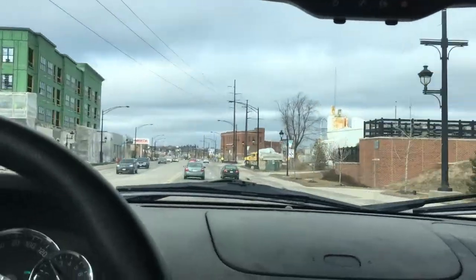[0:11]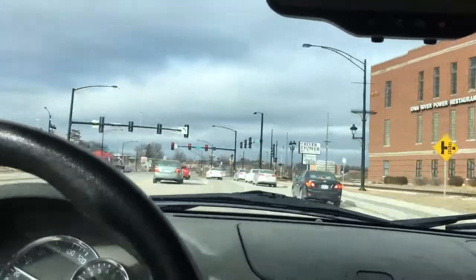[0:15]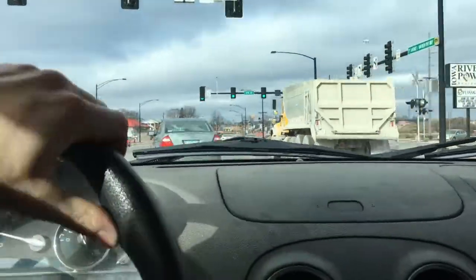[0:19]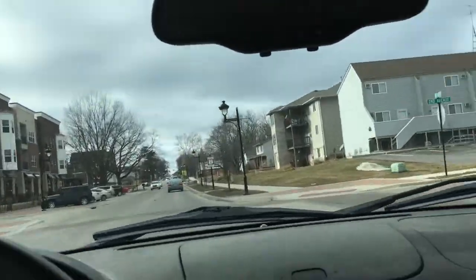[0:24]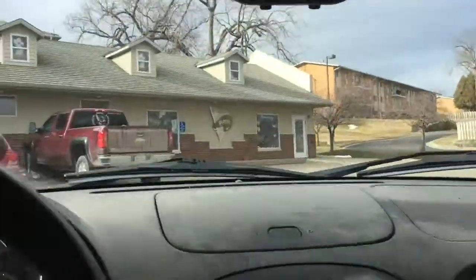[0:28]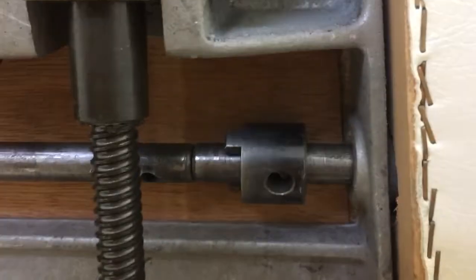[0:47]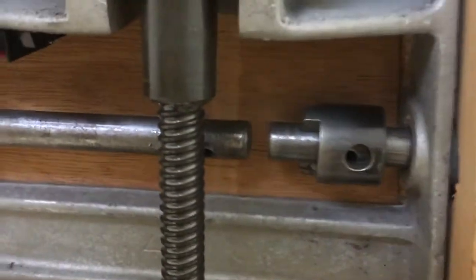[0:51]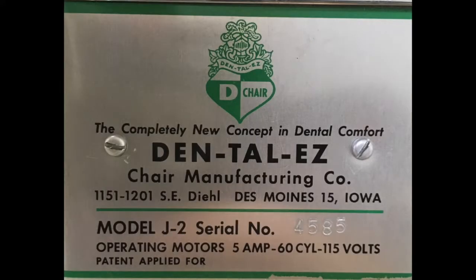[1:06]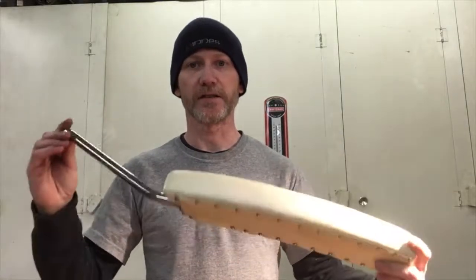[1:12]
I finally have a machining job to share with you. As you probably figured out from the intro clips, I am making a piece for an old dental chair that is now being used at a tattoo shop. So here I have this lovely 1960s or 70s styled arm. And basically what I'm making is the piece that allows this arm to go up and down and stop in the up position and the down position.
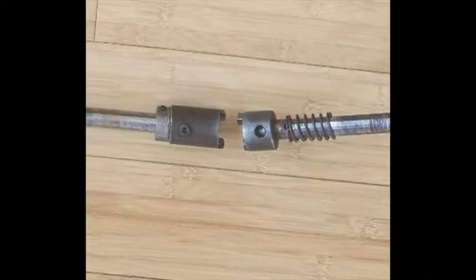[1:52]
And the piece was not broken, it was disassembled and lost. And parts for these are kind of scarce. If you can find the arms on eBay, they want hundreds of dollars for the arms, and I just need this little piece. So essentially, this is the piece we do have, and the other end of it is basically the same thing, just a little bit longer. And as you can picture, when they come together, it would be able to turn just that much.
So I'm going to make one out of this random chunk of steel I had in my junk drawer. Since I don't have a milling machine, making these two little notches would be kind of tricky. I was thinking I could set it up in a drill press, drill a series of holes, and then remove the waste with a file and a grinder, but I think what I'm going to do is just make it flat, drill and tap two holes, and put in two cap screws. And I think that should do the trick. And if for some reason the head of a cap screw ever breaks off, I should be able to back it out and put in a new one, but unless somebody's jumping on it, I think it should hold up.
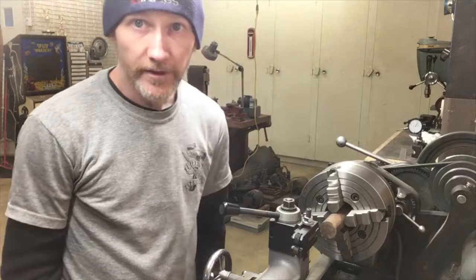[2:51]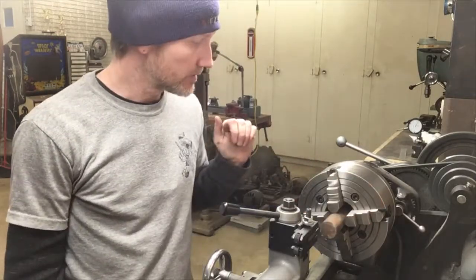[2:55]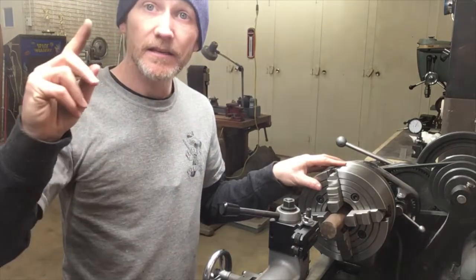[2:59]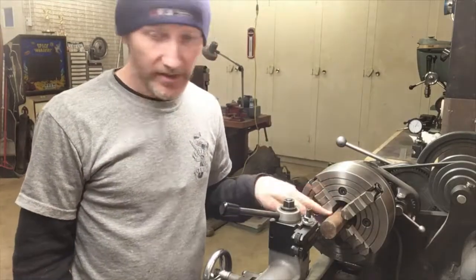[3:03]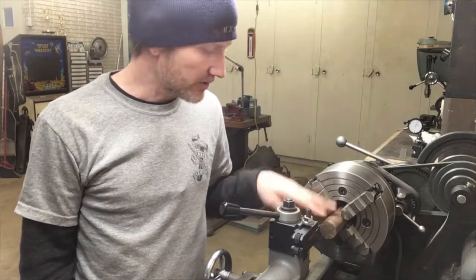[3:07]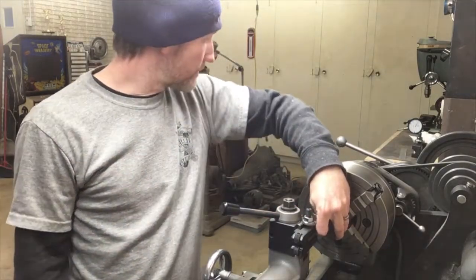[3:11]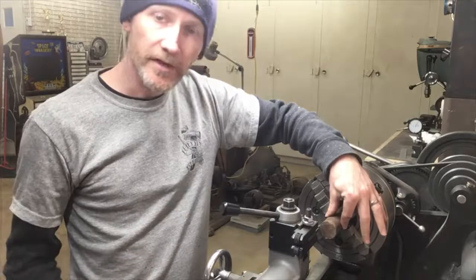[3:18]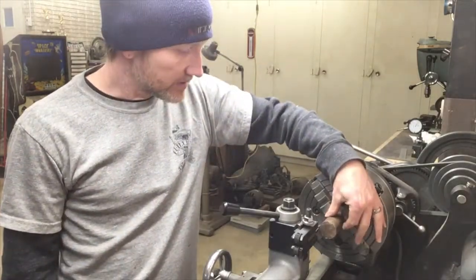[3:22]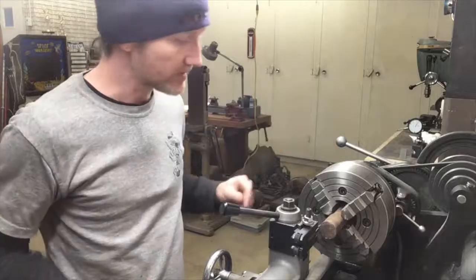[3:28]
So, finally, let's go to the lathe. All right, we're over here at the lathe. I've already got the metal chucked up in here. I didn't show indicating that because my only indicator stand happens to be my camera stand. So I'm basically just going to face it. I'm going to have to turn it down to, I'll double check, but I think it's 1¼ inches OD. Drill in a 5/8 inch hole and then part it off somewhere around 1¾ inches, I think. I only just looked at pictures of it, but it's not really critical. All it has to do is have two little bumps and fit over the piece and have a set screw. So I'm just going to get to it.
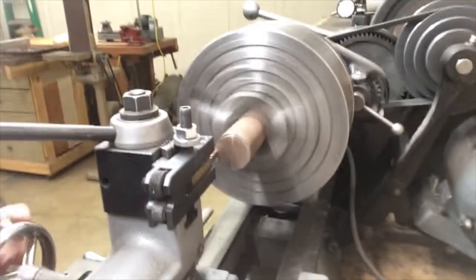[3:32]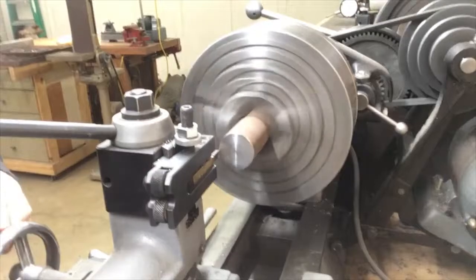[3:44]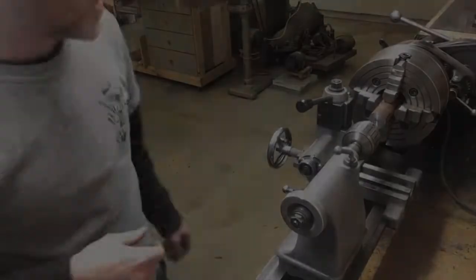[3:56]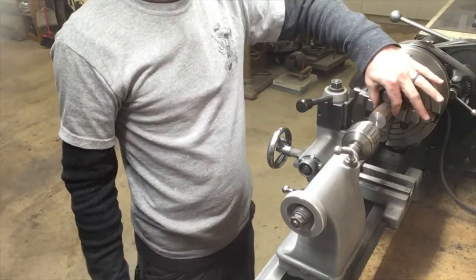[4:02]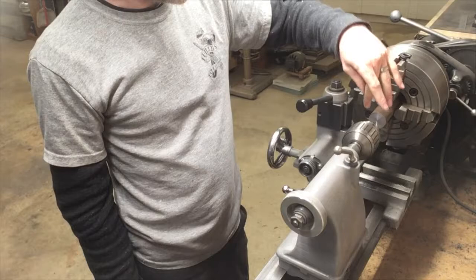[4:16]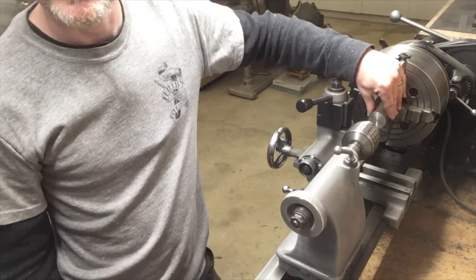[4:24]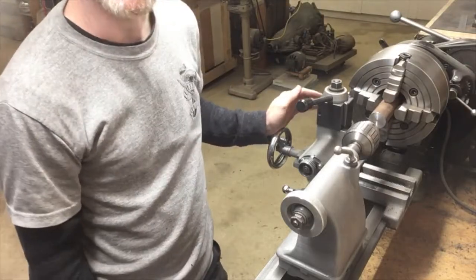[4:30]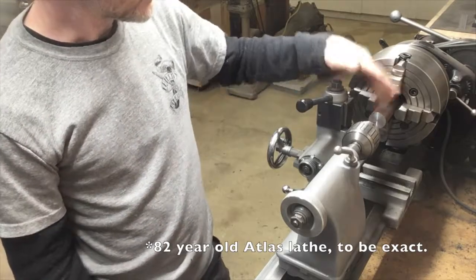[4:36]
So I'm just going to put a hole here for a center to support it, even though this is 1½ inch steel stock, only sticking out 2 inches. This Atlas lathe is flimsy as hell. It might as well be made out of cardboard. So I need all the help I can get. So I'm going to get a center on here just to turn this down a little bit. As you probably noticed on the facing, I was taking about, I don't even know, 5/1000ths passes or something. That was all I could do before it started chattering. So that's just the life of having a 100-year-old Atlas lathe. So I'm going to punch that, get a center in, and turn it down.
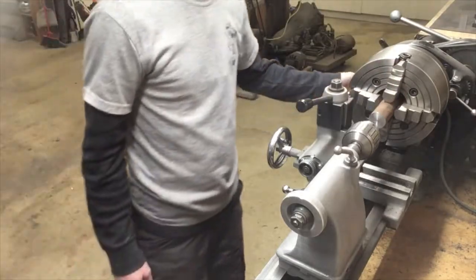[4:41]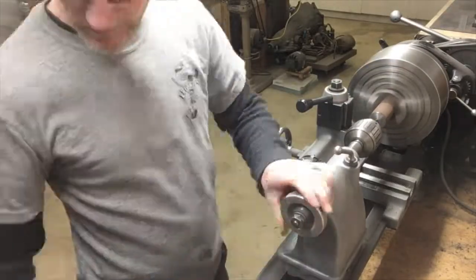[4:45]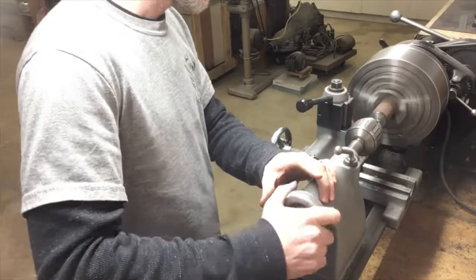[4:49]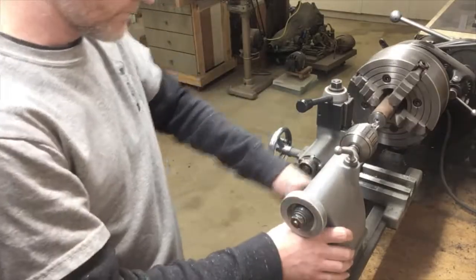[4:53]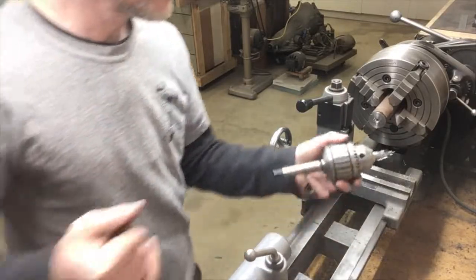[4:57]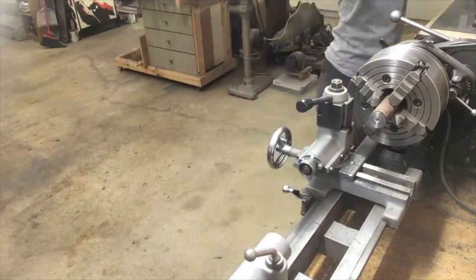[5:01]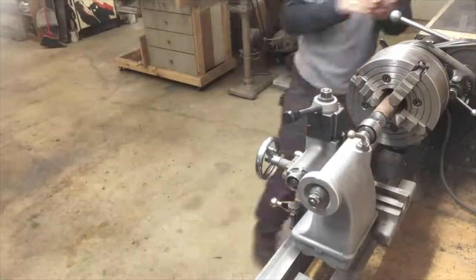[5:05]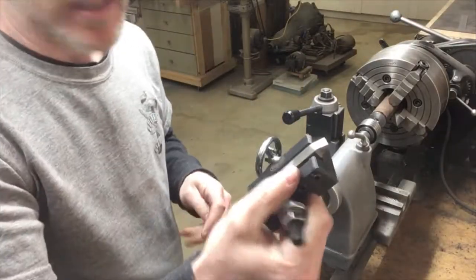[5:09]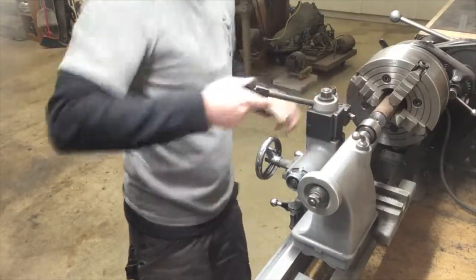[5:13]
I'm just using high-speed steel here. I'm not fancy enough for insert tooling.
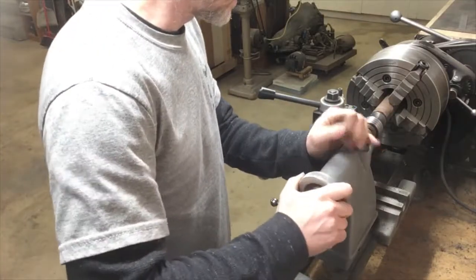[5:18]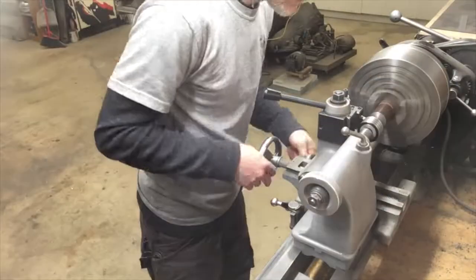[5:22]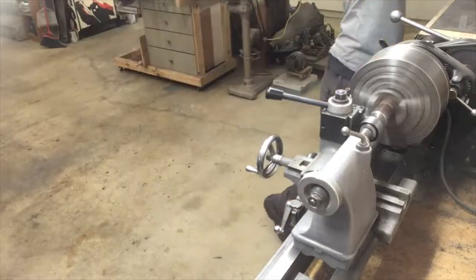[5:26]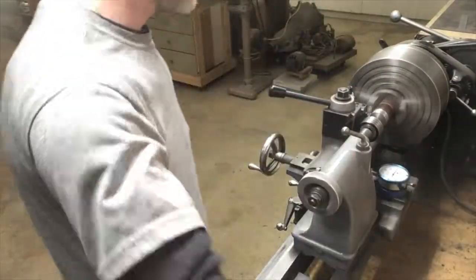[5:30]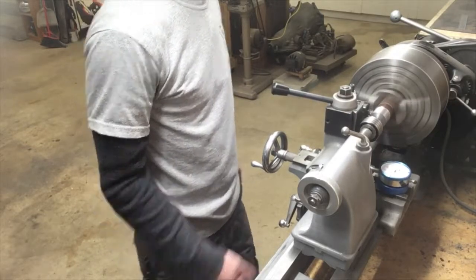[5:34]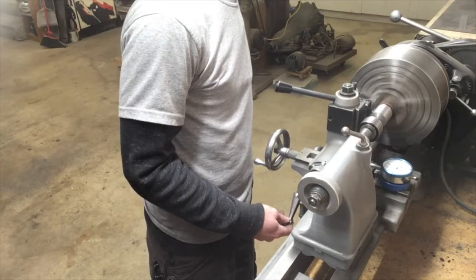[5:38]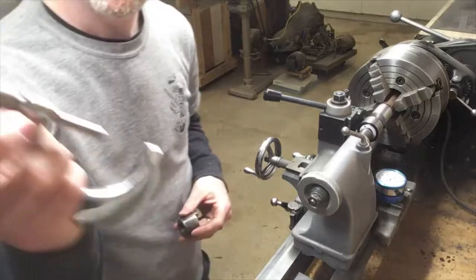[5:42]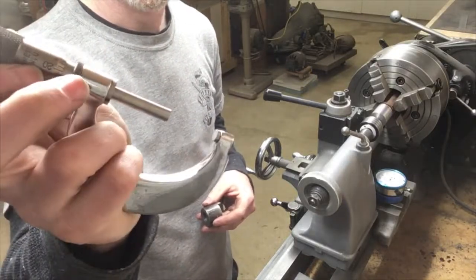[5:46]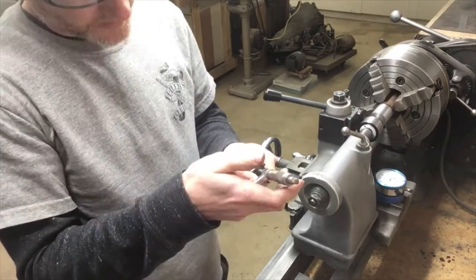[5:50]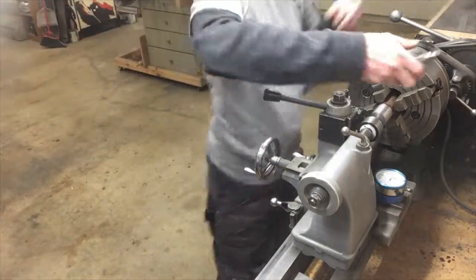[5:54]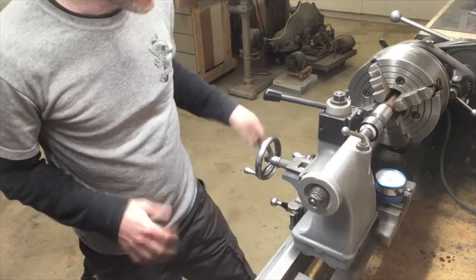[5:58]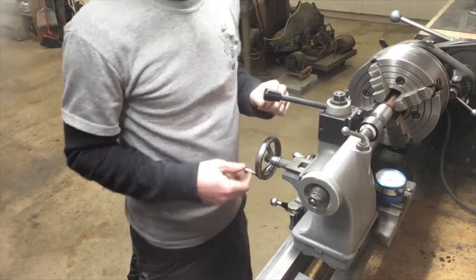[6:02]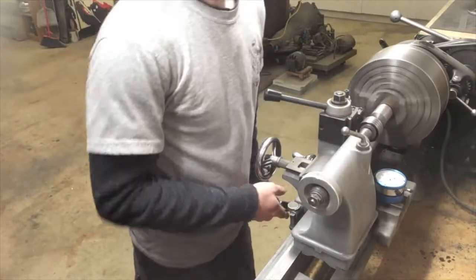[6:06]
This is just an excuse to show off my Shure Tomiko 1-2 inch micrometer. First time I've used this size. But I got just a bit over 1 1/4. It's 1.300. I need to go 1.200. So I've got to take off 100 thousandths. That's going to be about 30 passes on this thing. Let's try 20.
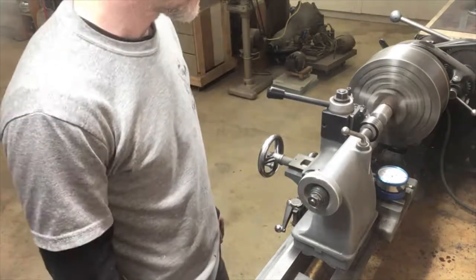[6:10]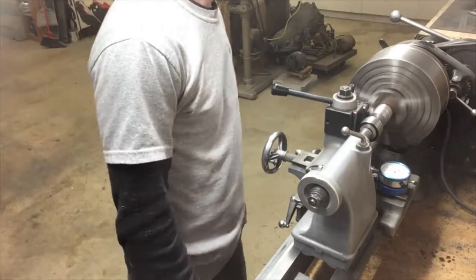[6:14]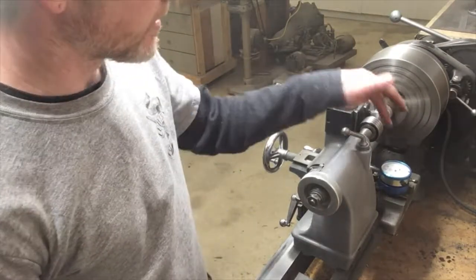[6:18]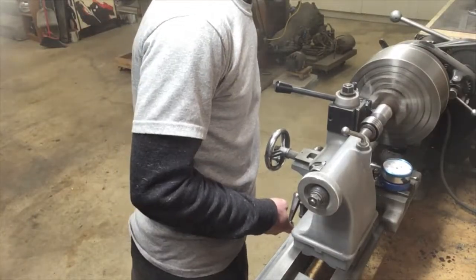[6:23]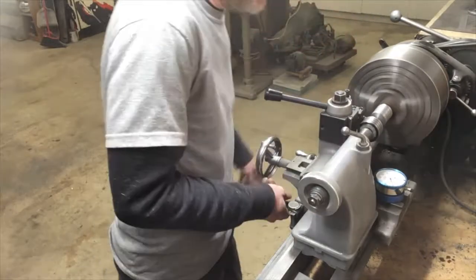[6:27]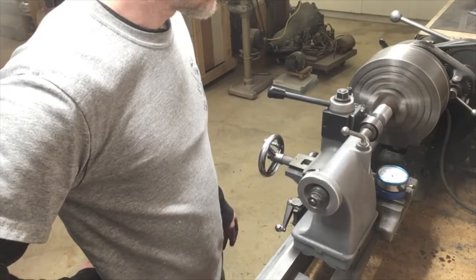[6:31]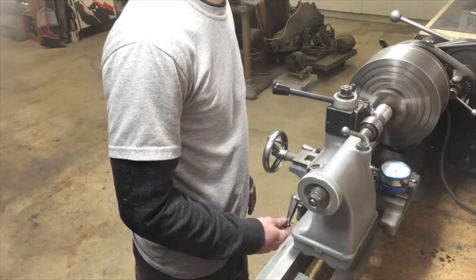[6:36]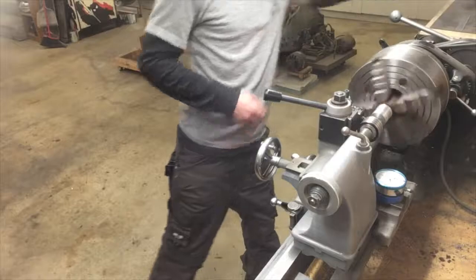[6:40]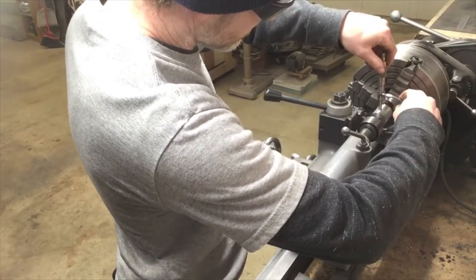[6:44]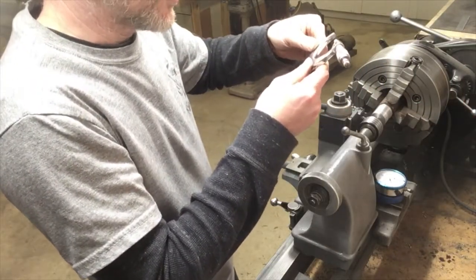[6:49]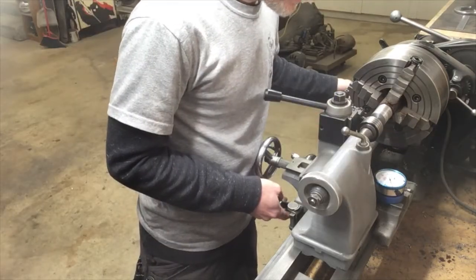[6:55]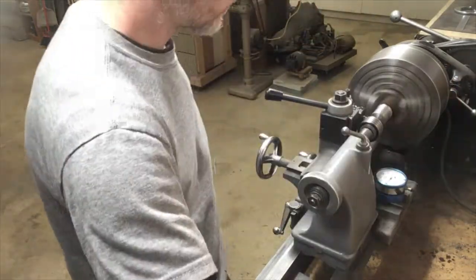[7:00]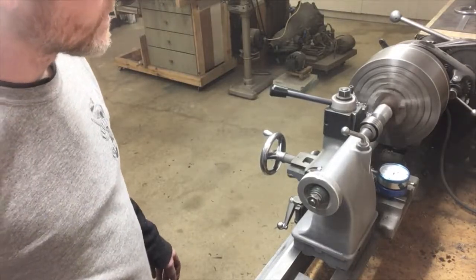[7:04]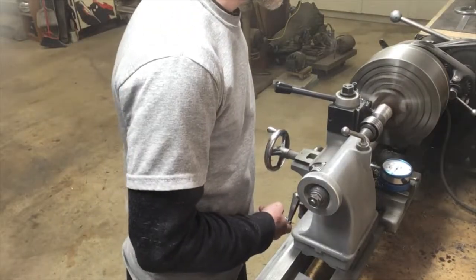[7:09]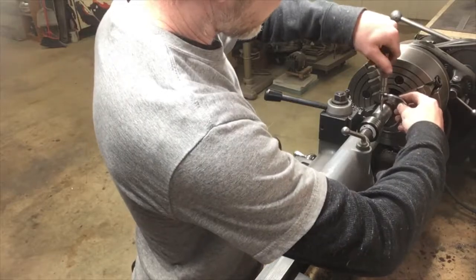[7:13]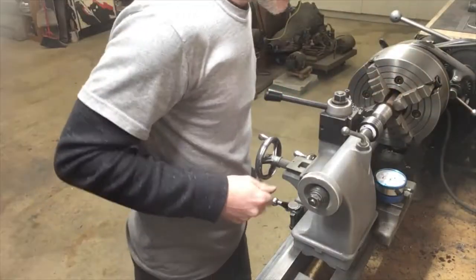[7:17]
I have no graduations on the dials, so I have to have the indicator set up. Do another 20. Okay, I got 1 inch, 279. So I'll take another 10. That should get us pretty close. Okay, if I measured correctly, that should be within about 5 thousandths. Let's do a quick little finishing pass.
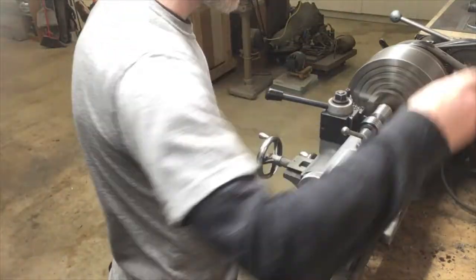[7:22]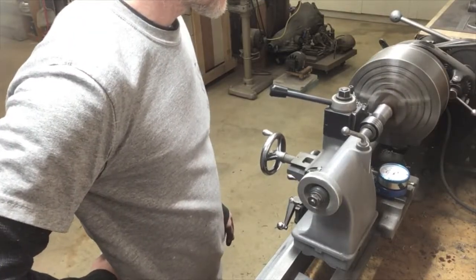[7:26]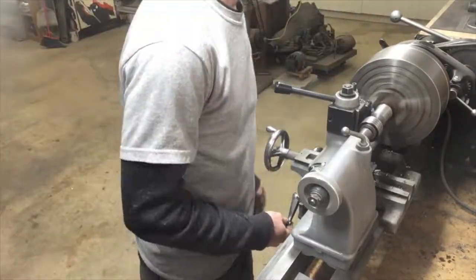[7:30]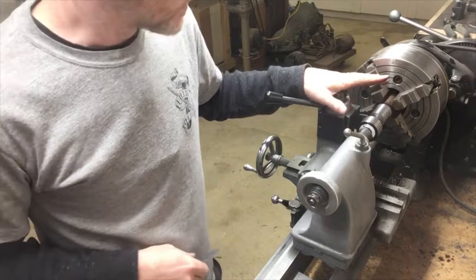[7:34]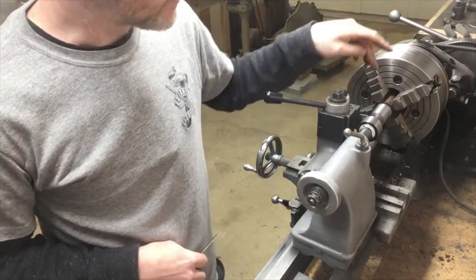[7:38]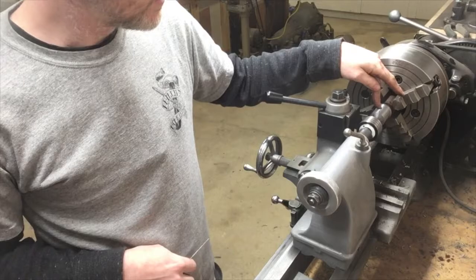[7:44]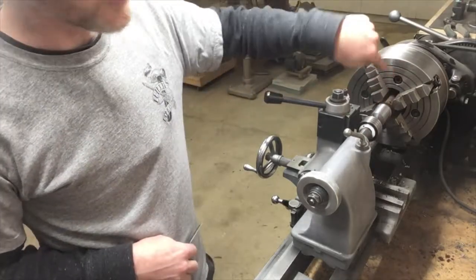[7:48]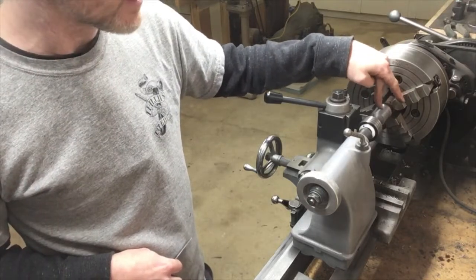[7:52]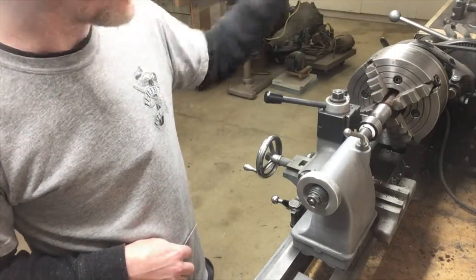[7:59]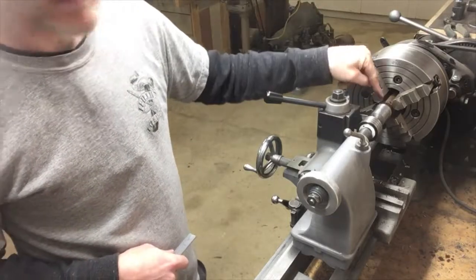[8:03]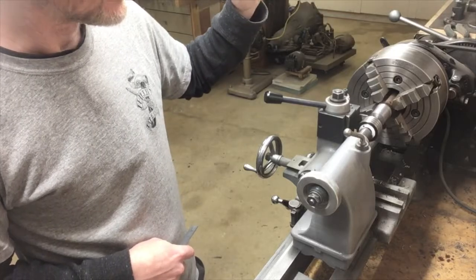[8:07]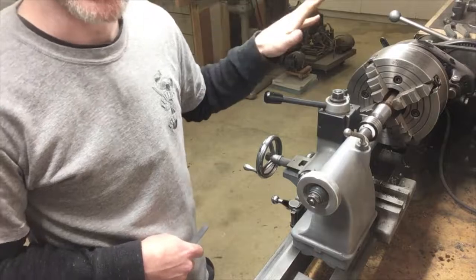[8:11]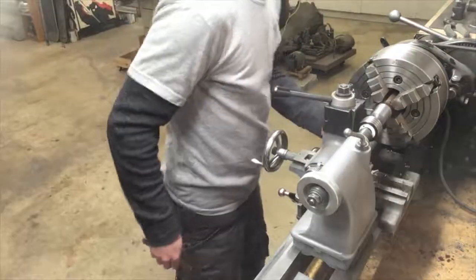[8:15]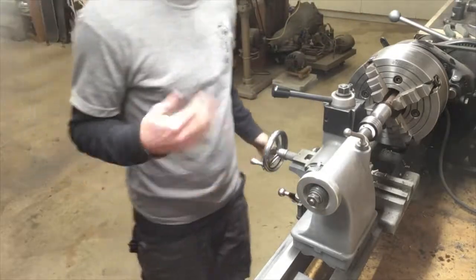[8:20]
Okay, so the normal order of operations wouldn't be to do it this way, but this lathe, I know it well enough to know it's too flimsy to do any parting without a center in. So I'm going to part part of the way through while I still have the center. Then I'm going to switch out, drill through it, and hopefully it'll be close enough through that I can just finish it off with a hacksaw or something. Basically, parting on this is just painful. I have it in back gears on the absolute slowest speed, and I've got to go real slow, use a lot of oil, have the center nice and tight, and maybe I'll be able to make a cut without the blade exploding. Safety glasses on. I'll lock it right there and get my oil and hope for the best.
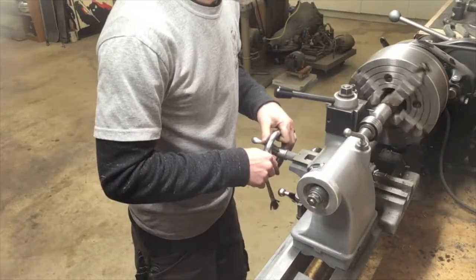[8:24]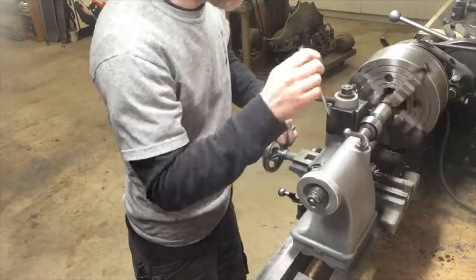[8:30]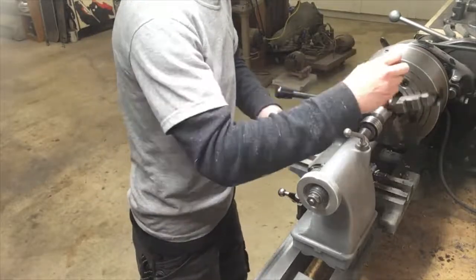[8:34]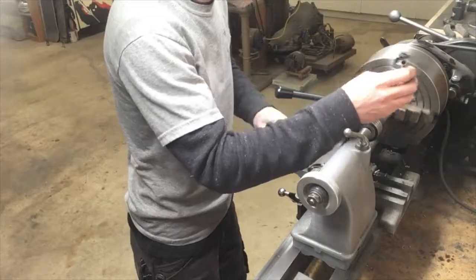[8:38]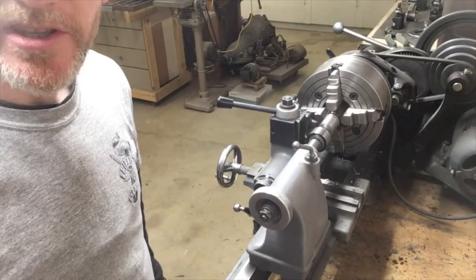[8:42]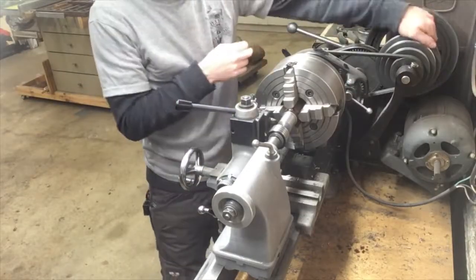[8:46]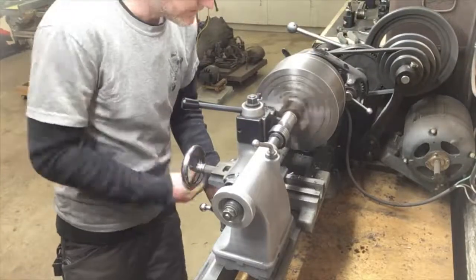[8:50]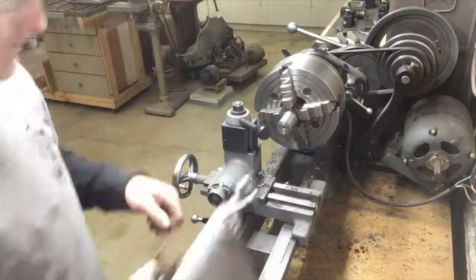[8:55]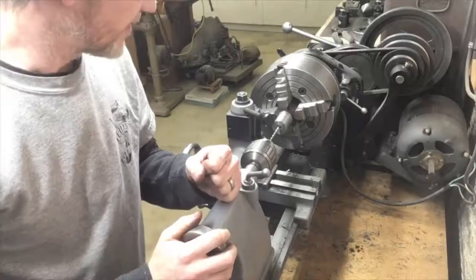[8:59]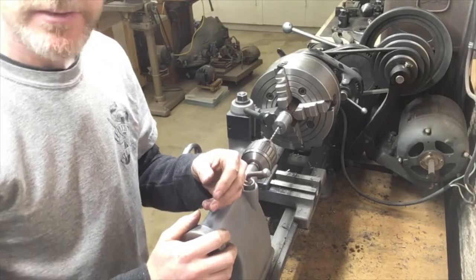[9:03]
All right, I'm going to chamfer the edges and start punching that 5/8 inch hole, after I take it out of back gears, that is. All right, I'm going to start with a 1/4 inch drill and work my way up to 5/8.
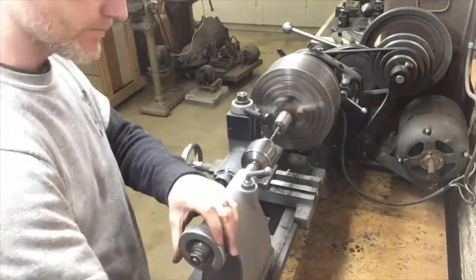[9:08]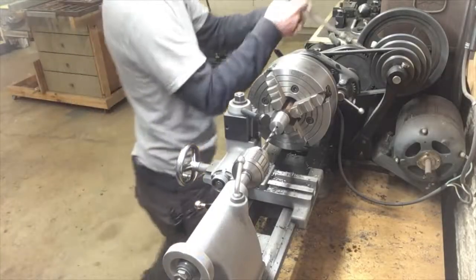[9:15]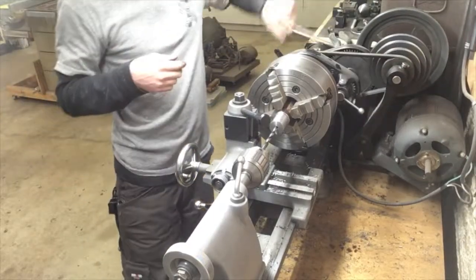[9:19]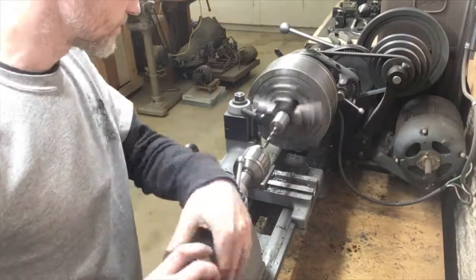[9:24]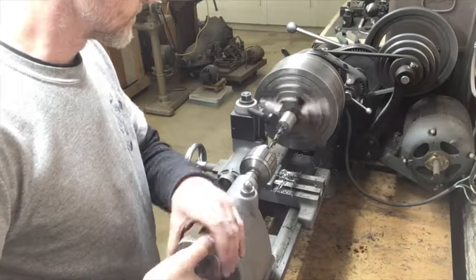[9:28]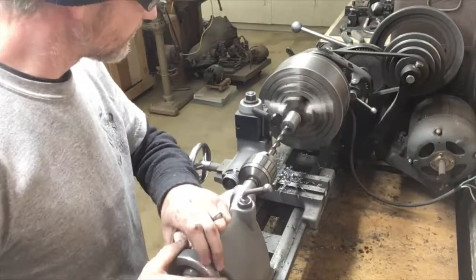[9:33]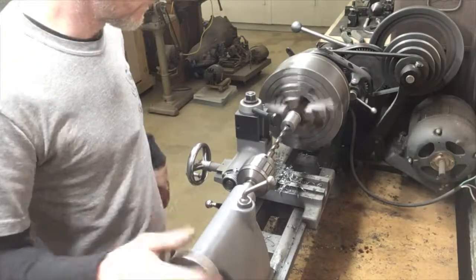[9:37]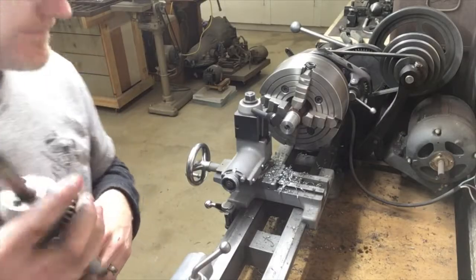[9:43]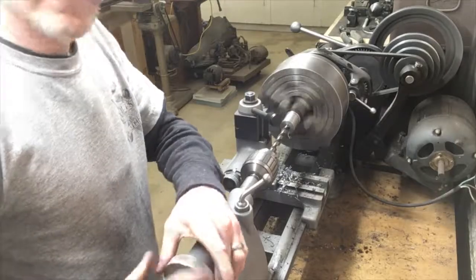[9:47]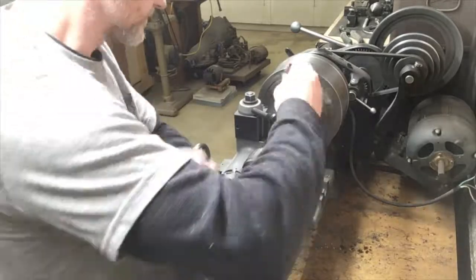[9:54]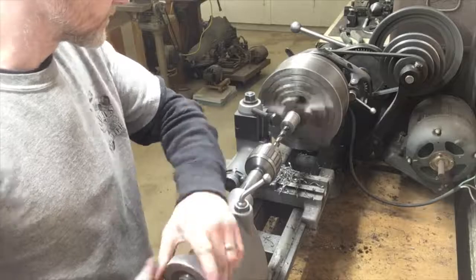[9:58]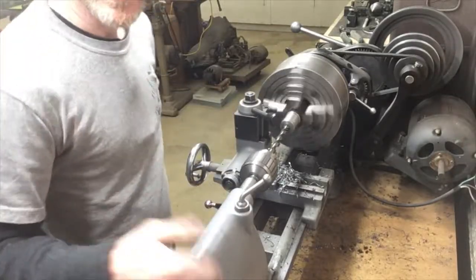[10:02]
That is not a good grind. To the grinder. All right, let's see if that works a little better. Not as good as factory, but it'll work. All right, time for 5/8.
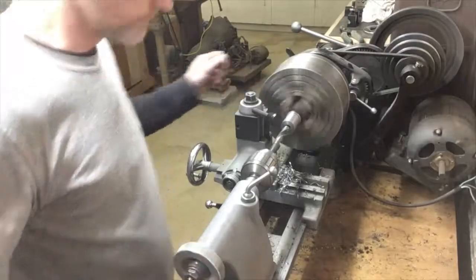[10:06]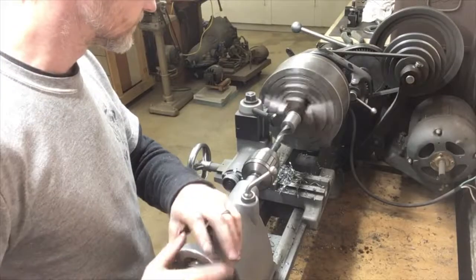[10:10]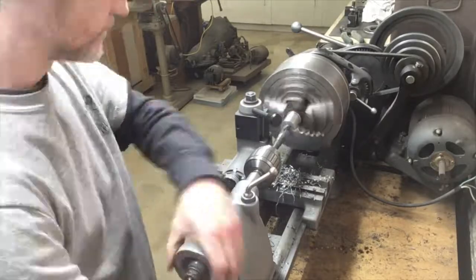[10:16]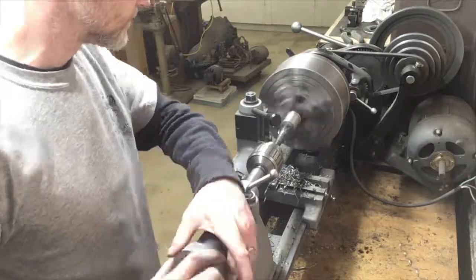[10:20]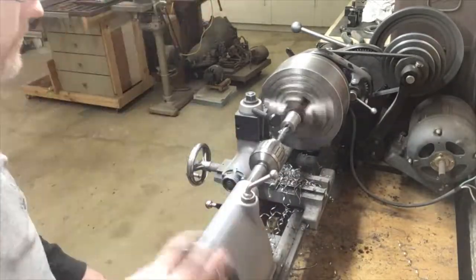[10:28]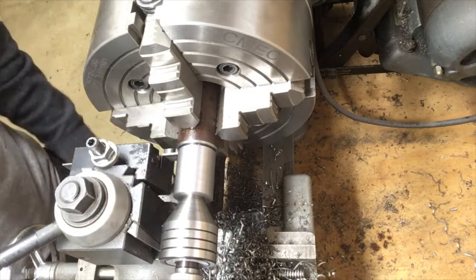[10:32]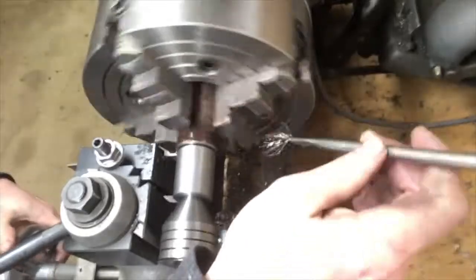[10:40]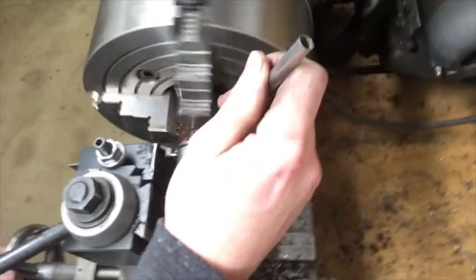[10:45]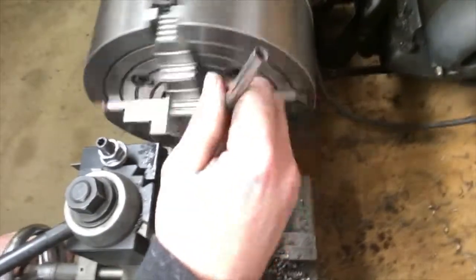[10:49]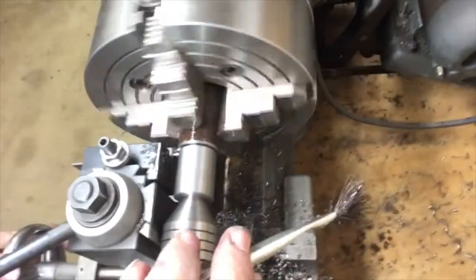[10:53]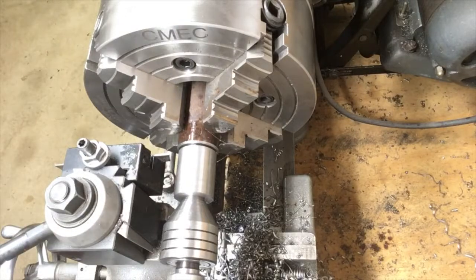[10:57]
All right, I got it in back gears again. I got the center back in, and I'm gonna see if I can part this. I might have to get out the hacksaw, but we're gonna try this. It might actually be working.
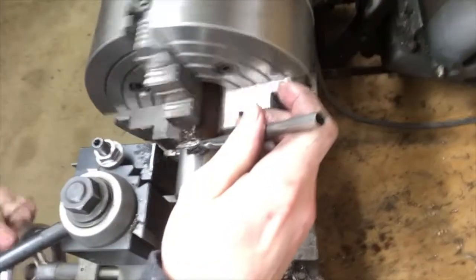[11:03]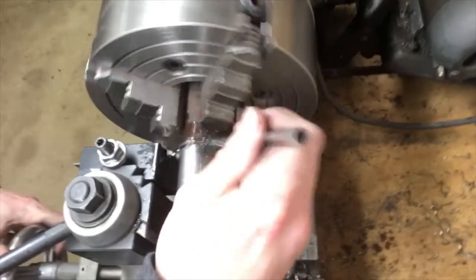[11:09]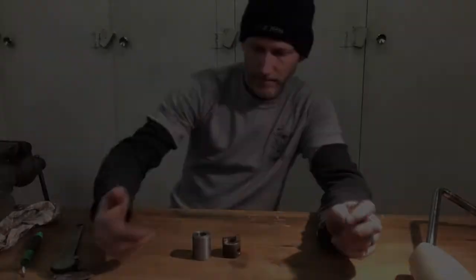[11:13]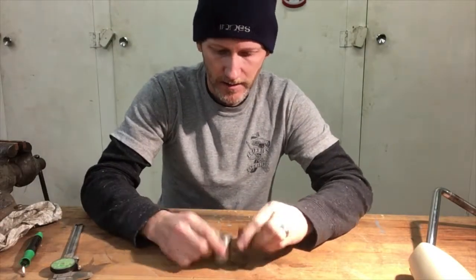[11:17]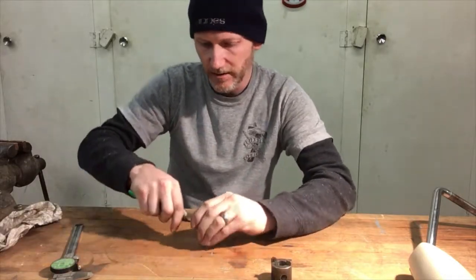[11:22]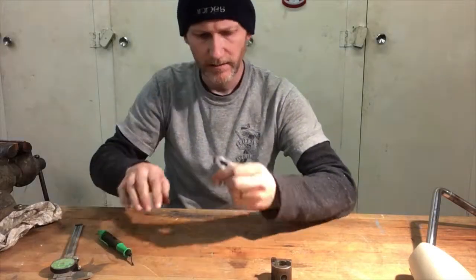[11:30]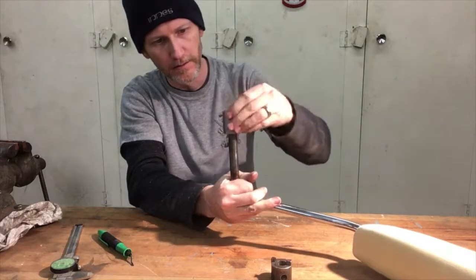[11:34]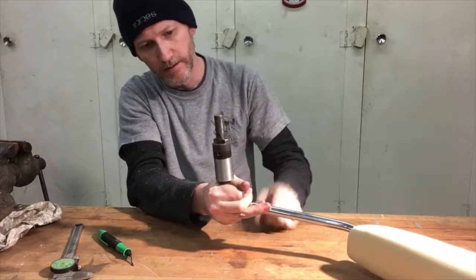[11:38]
Okay, now I got most of that lathe work done. I already chamfered the edges, so deburr the inside. And with any luck, there you go.
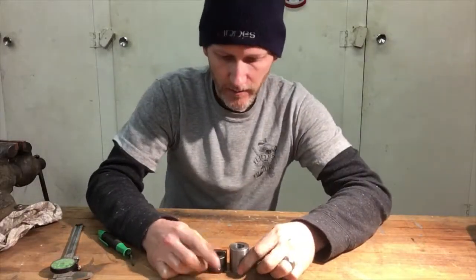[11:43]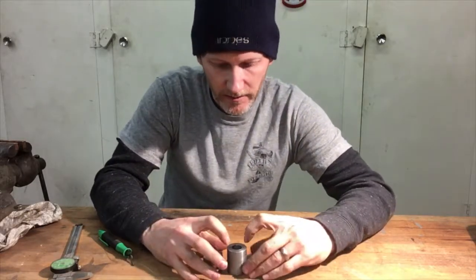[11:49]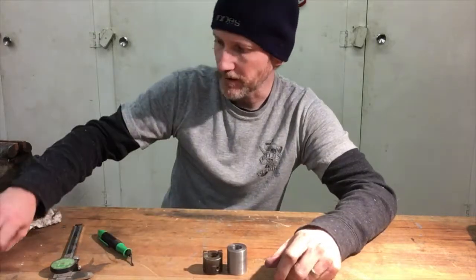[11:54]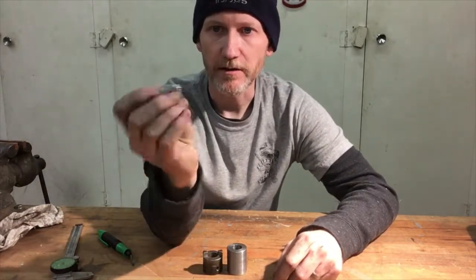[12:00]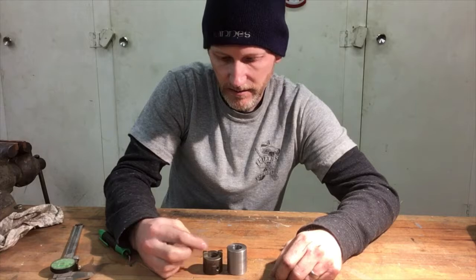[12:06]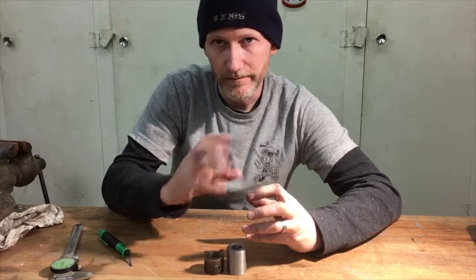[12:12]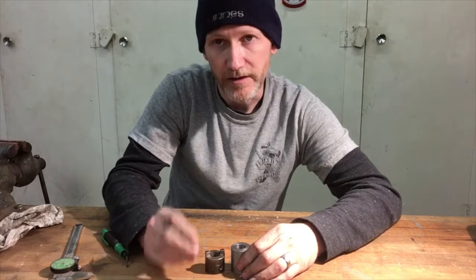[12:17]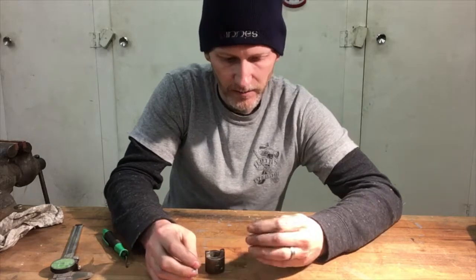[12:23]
Rather than try to cut these tabs, I think what I'm going to do is drill two holes directly across from each other, tap for 10-24, and then put in these little Phillips head or cheese head, whatever you want to call them, screws, because those heads are about the right size to match up with those. If I get something too big, I'm going to reduce the amount of movement that arm has, but if I get something too small, I run the risk of it breaking off easily. So I'm hoping a 10-24 will be a good compromise.
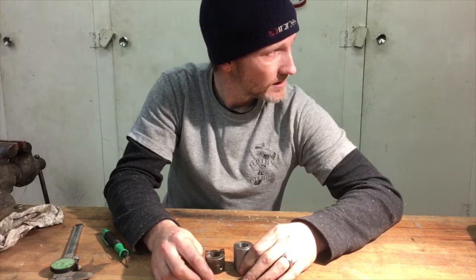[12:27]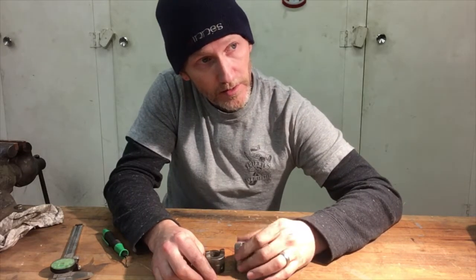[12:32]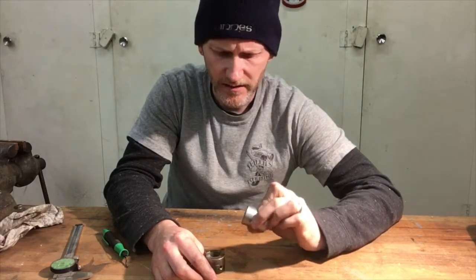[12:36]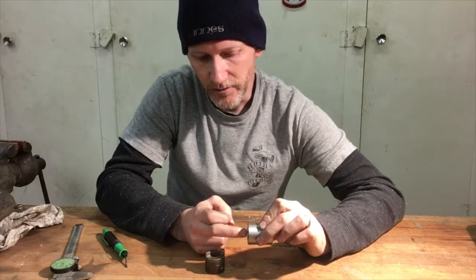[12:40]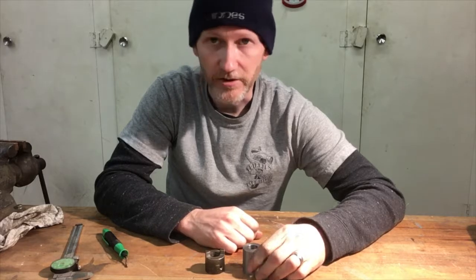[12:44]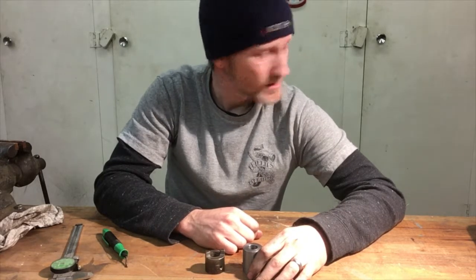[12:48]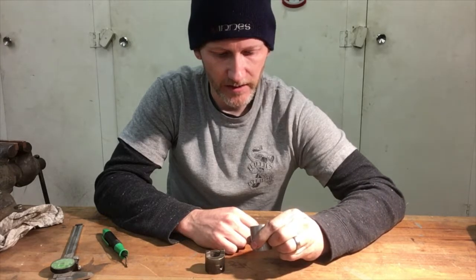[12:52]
I suppose I'll probably just do it in the drill press. I like the idea of having something a little more predictable, like the lathe, but I would have to set this up in the four-jaw off center to drill it. And I'm just not sure I have the proper measuring tools to get that dialed in correctly. So, I'm gonna get some layout fluid and scribes and punches and try to get this laid out.
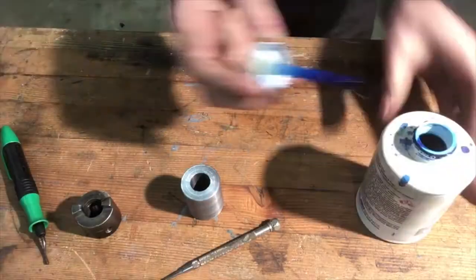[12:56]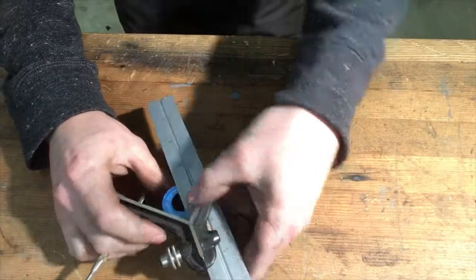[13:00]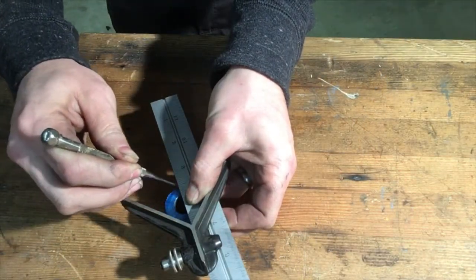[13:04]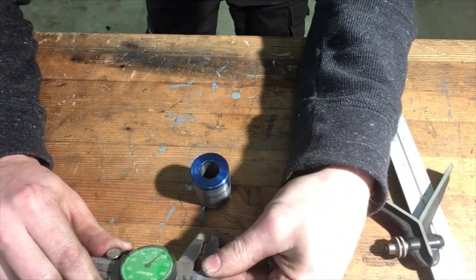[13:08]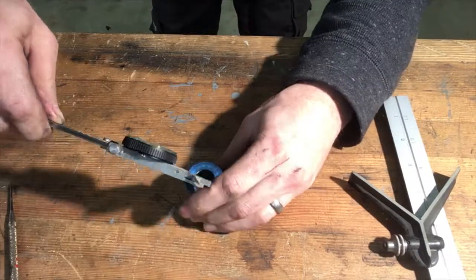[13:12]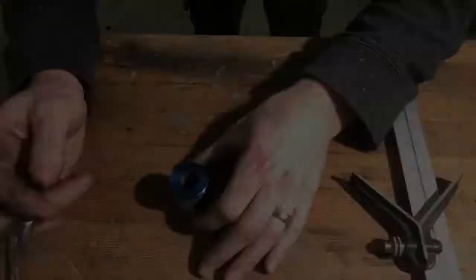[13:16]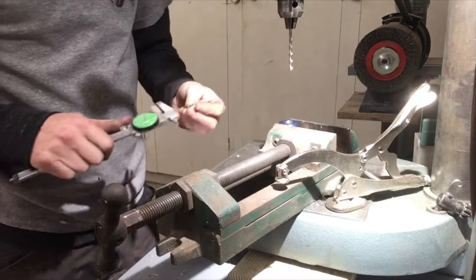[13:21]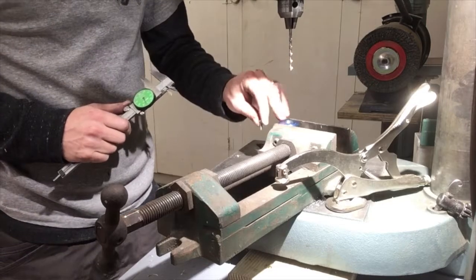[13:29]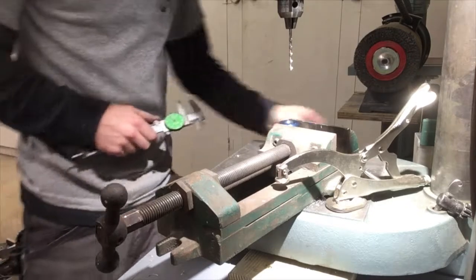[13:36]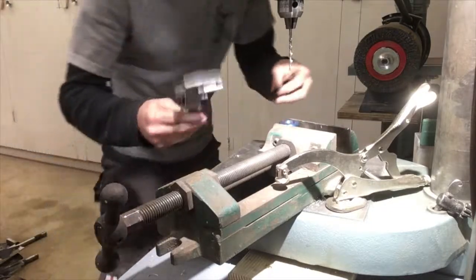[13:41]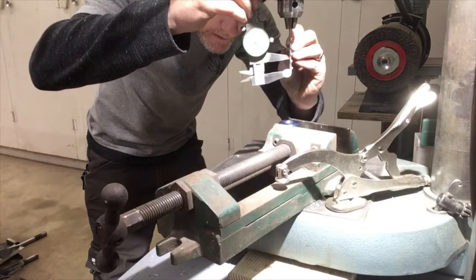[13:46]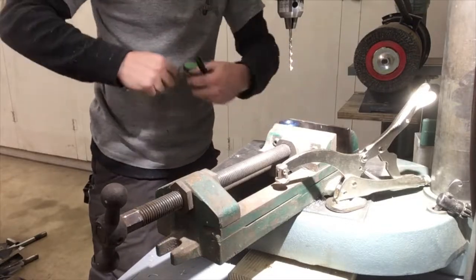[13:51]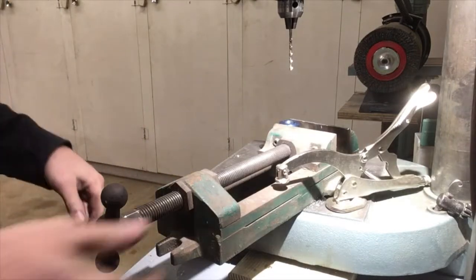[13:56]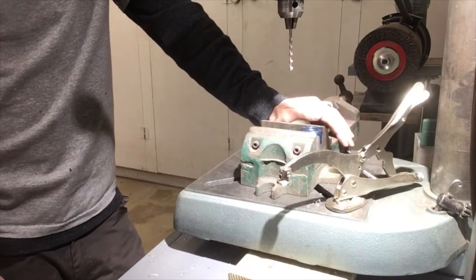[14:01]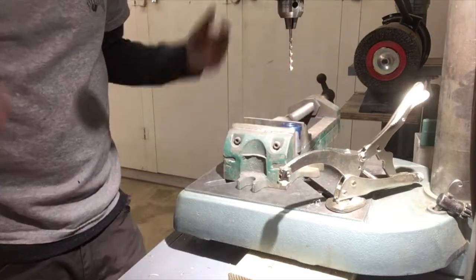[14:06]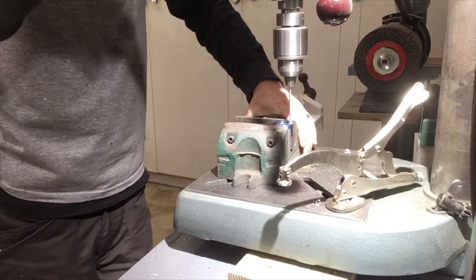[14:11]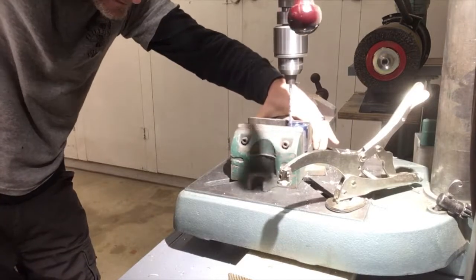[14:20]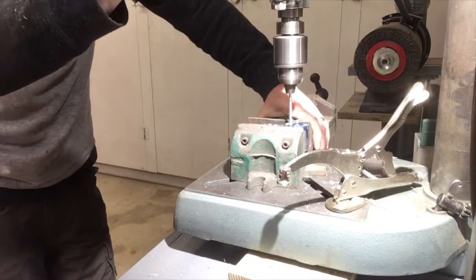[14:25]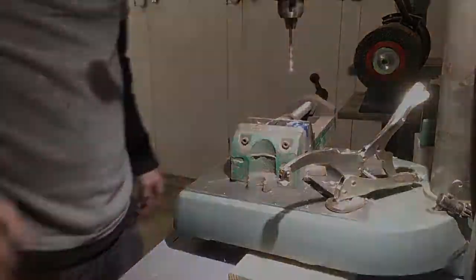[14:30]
I'm not at all confident that my drill press table is perfectly perpendicular with the quill, but it's all I've got. There we go, two holes.
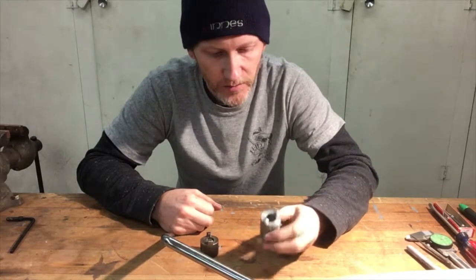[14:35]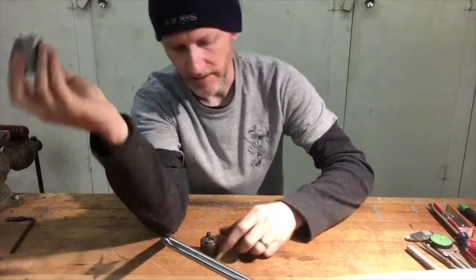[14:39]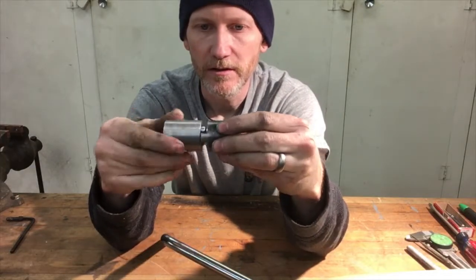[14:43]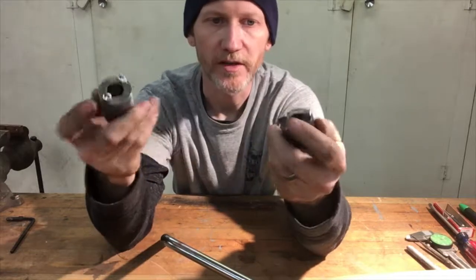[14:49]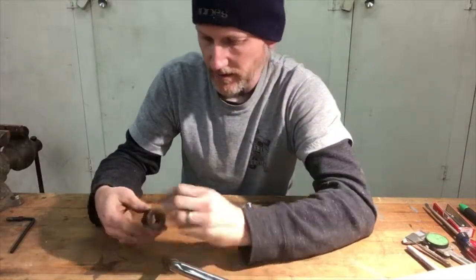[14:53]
All right, well, I didn't do that on camera because it's not very exciting to watch, but I got that tapped and put those two screws in there. Now you can see how it works, that it will stop at those two positions, and that's the armrest being down and the armrest being up. So the last part is the mounting.
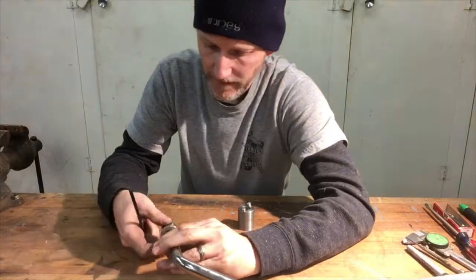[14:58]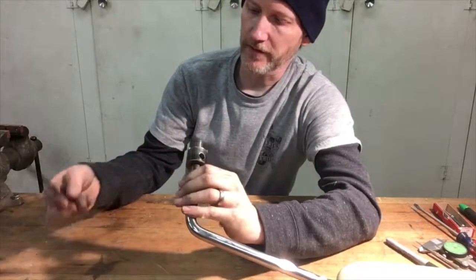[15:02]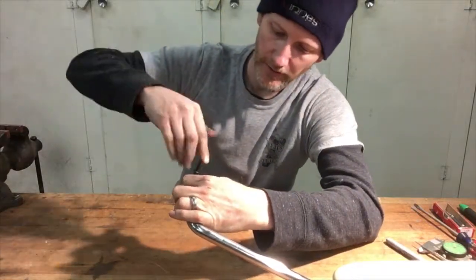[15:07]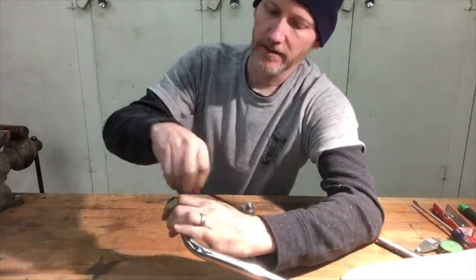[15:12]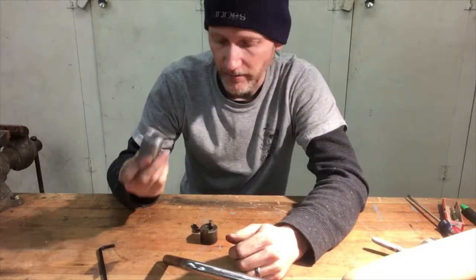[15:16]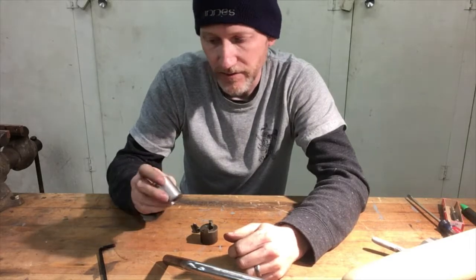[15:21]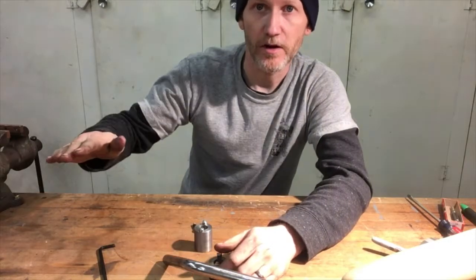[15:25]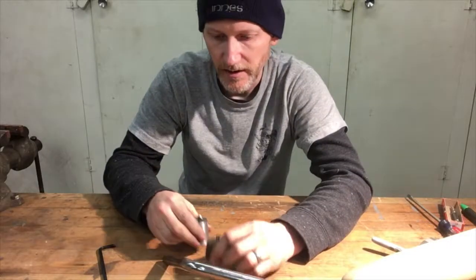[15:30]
Originally, you would slide that over, and then you'd have a long cap screw that would go all the way through and tighten into the other side. Now that's a great design, except since I don't have the original, I don't know exactly where that hole goes. And if I get it off even just by a couple of degrees, I'm gonna have an armrest that only comes down part way, or an armrest that's tilted down and there's no adjustment.
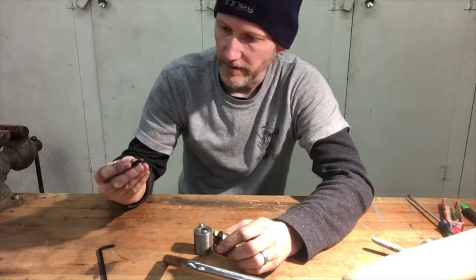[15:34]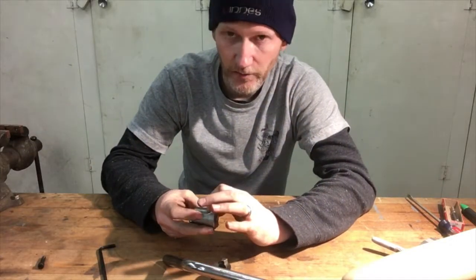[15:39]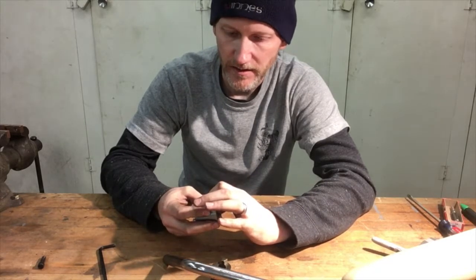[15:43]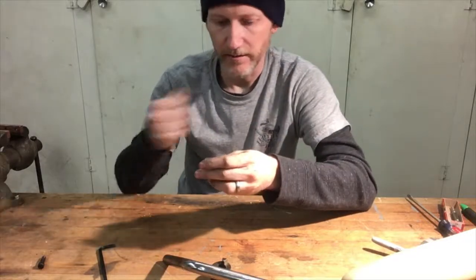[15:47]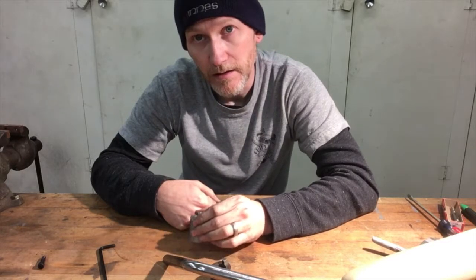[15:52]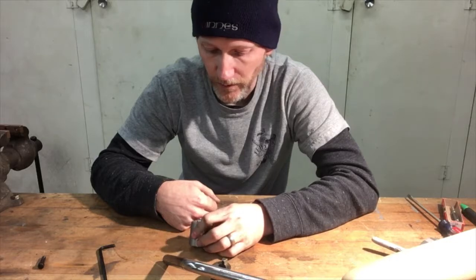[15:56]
So what I've decided to do in lieu of that is to install two decent sized set screws at 90 degrees so that I can set it wherever it needs to be, get it just perfect, and then crank those set screws down. And hopefully, again, if nobody's jumping on the armrest, hopefully it won't move.
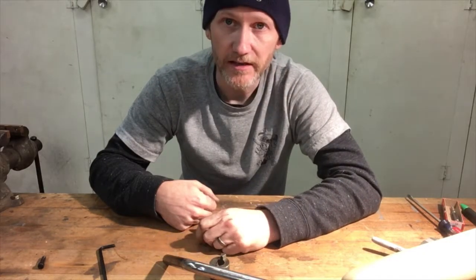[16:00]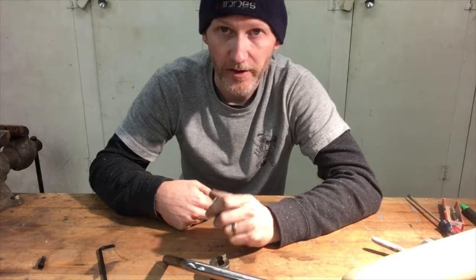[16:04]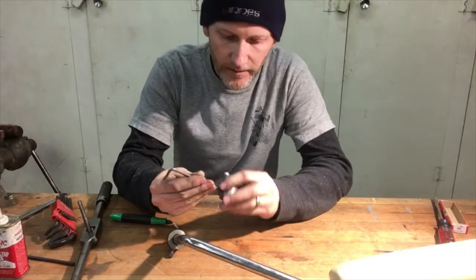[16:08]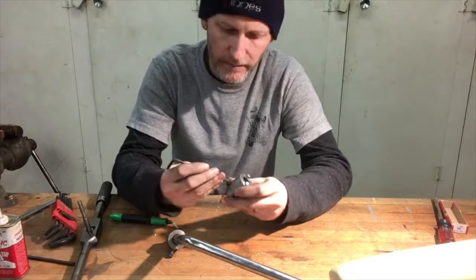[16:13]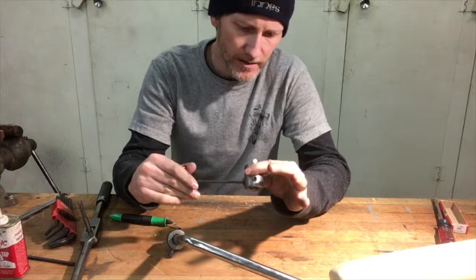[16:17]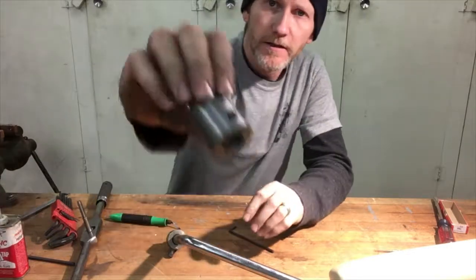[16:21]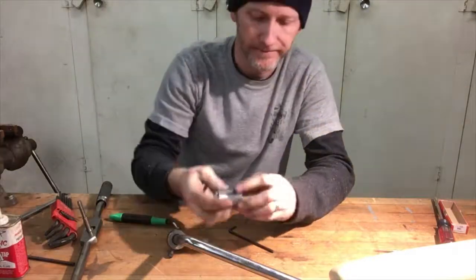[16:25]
So I'm going to mark this up, drill it, and again, that's not very exciting. You know how to probably drill a hole and tap a hole, so I will just bring it back when I'm done. All right, those last two holes are drilled and tapped. Got 5/16 fine thread set screws in here. So I'm hoping two of those will be enough to hold it. And if not, I guess I get to make a new one.
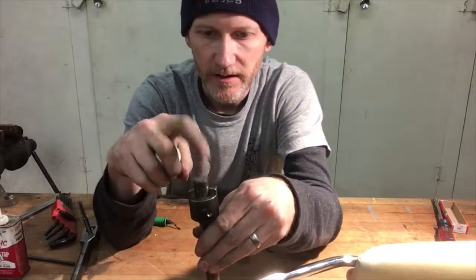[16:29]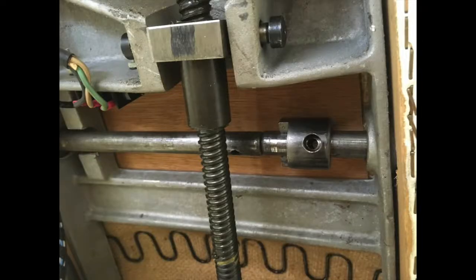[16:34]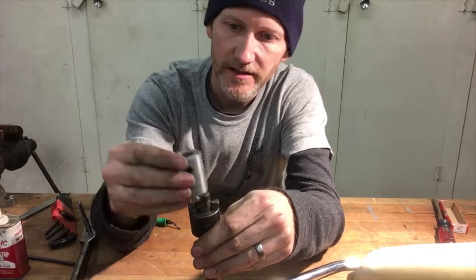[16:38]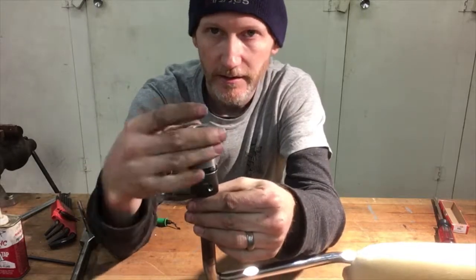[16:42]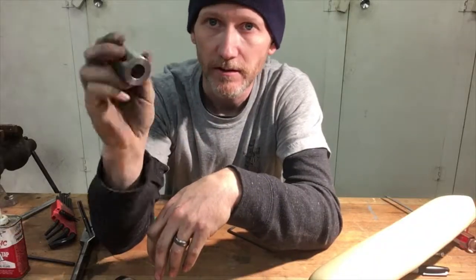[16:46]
Here's how it'll be. These two rods touch, and I'll show a picture of that right now. So then this slides over there, the set screws attach it to the other rod, and there's the range of motion. Tomorrow, I will bring you back to the tattoo shop and we'll see if it works.